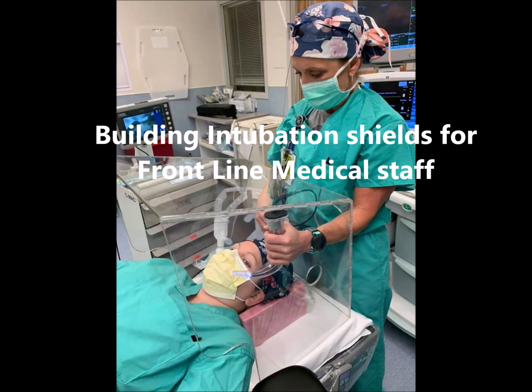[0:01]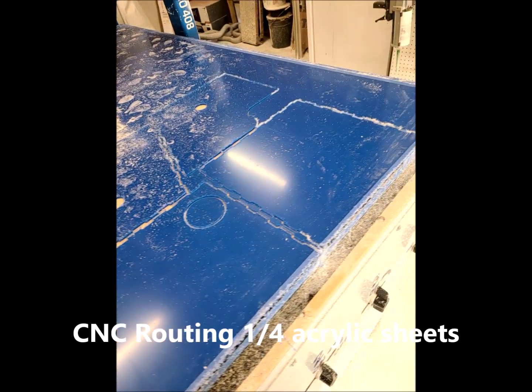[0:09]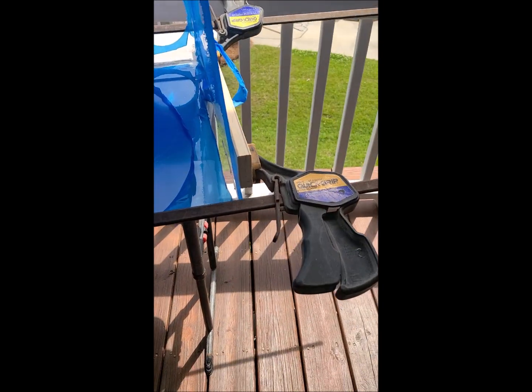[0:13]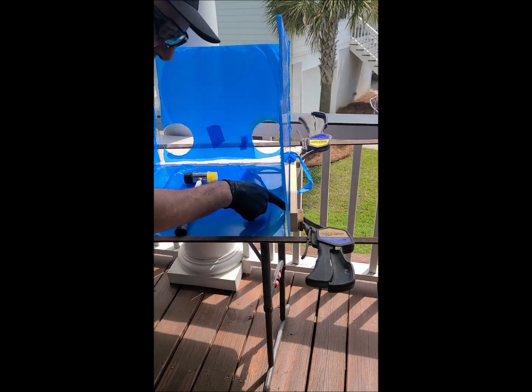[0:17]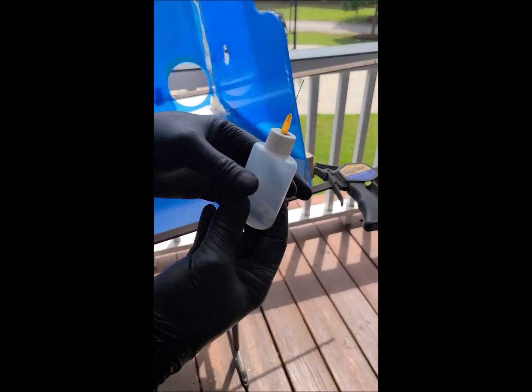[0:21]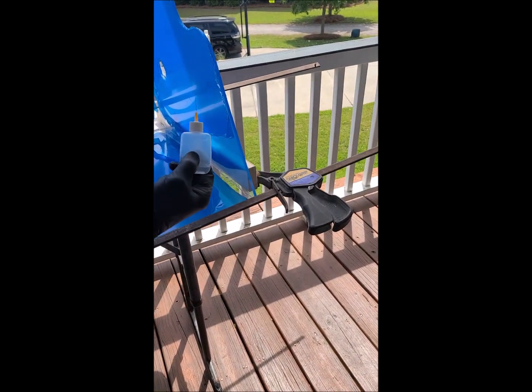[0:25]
So we're going to take and clamp this all together, and we're going to give it a couple taps, make sure that everything is nice and lined up, clamped together. Use the applicator bottle. You're going to go ahead and squeeze to get some air out, and then let it go as you come in.
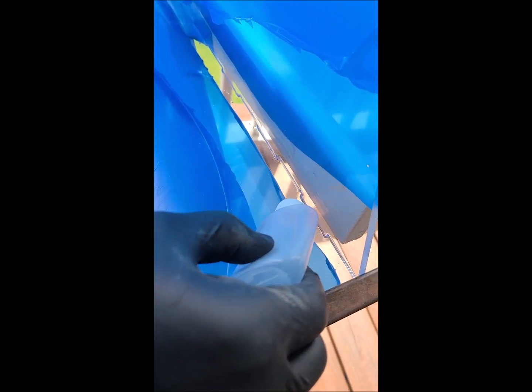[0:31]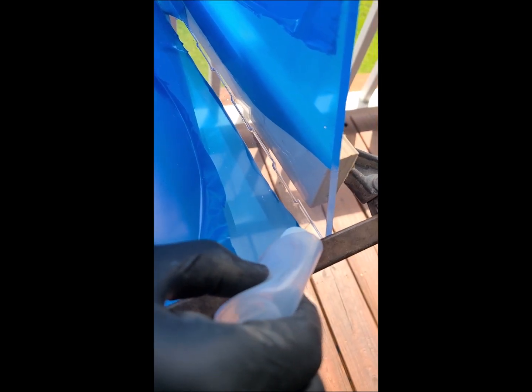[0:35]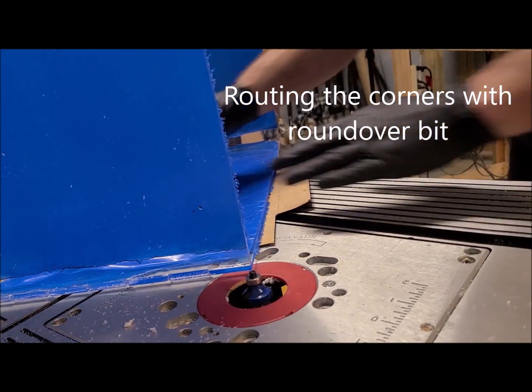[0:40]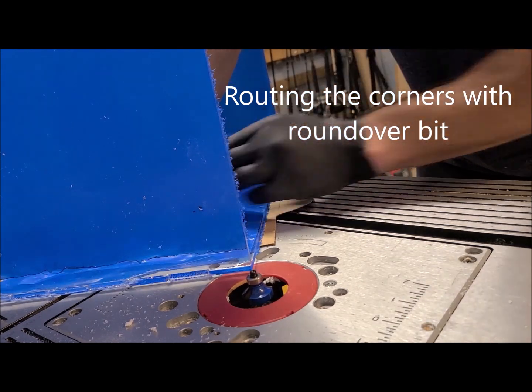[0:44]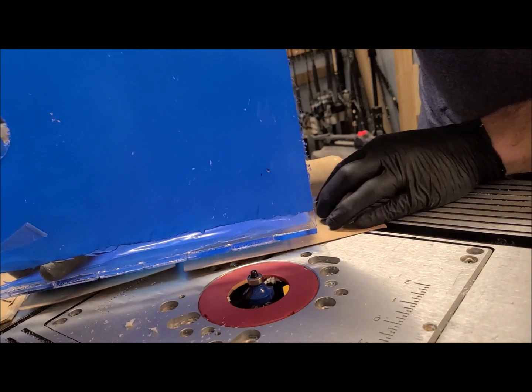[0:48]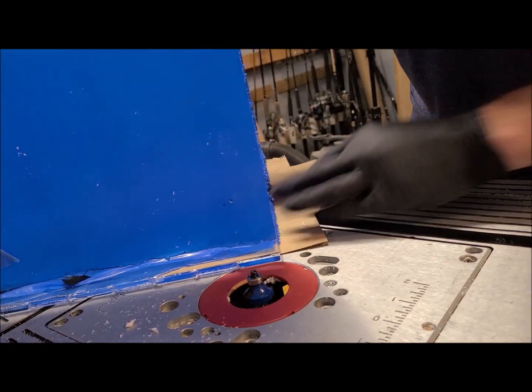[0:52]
And then you're going to go along the edge, and you'll see that that glue kind of gets sucked right up into those cracks. So now that these are glued together and taking some time to cure, we're going to take these sharp edges. We're just going to round them off a little bit with a little round over bit.
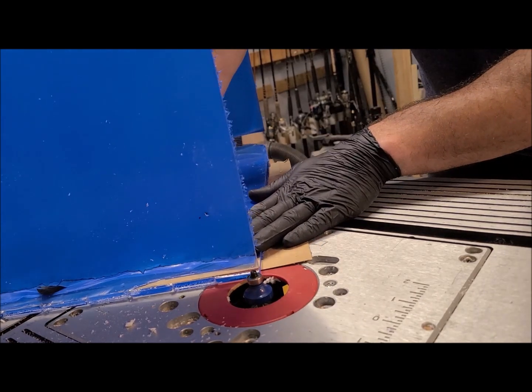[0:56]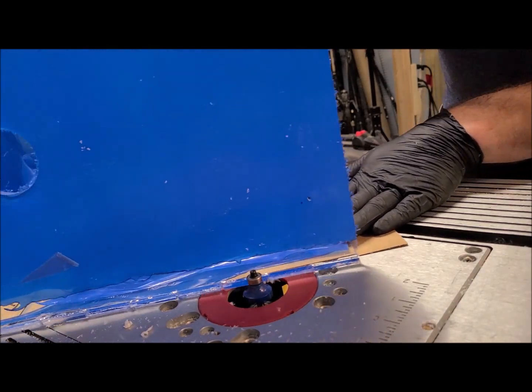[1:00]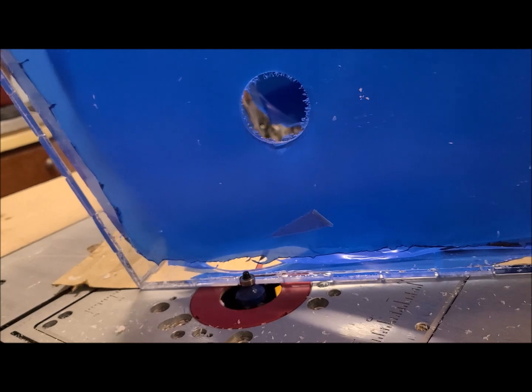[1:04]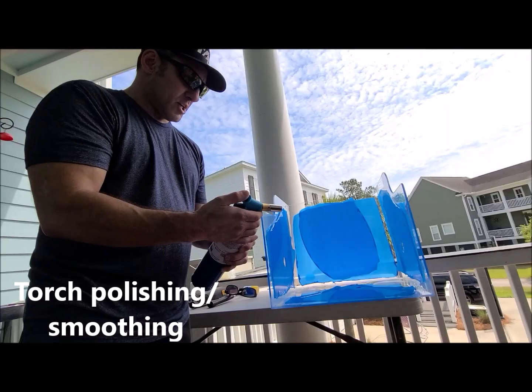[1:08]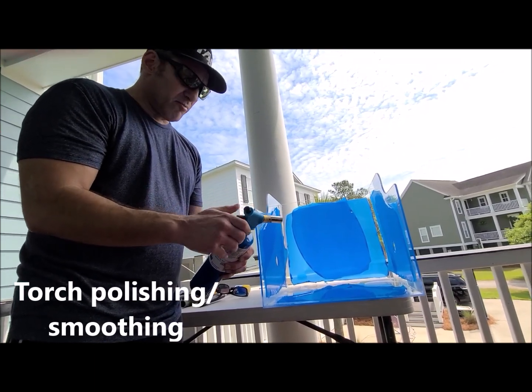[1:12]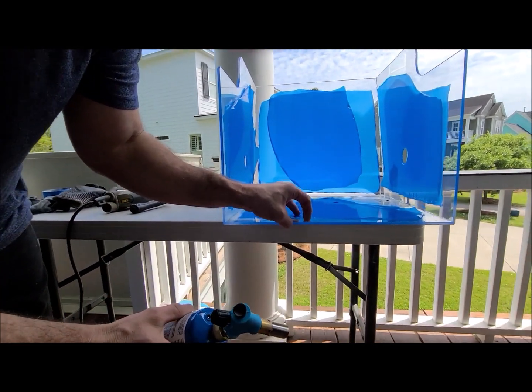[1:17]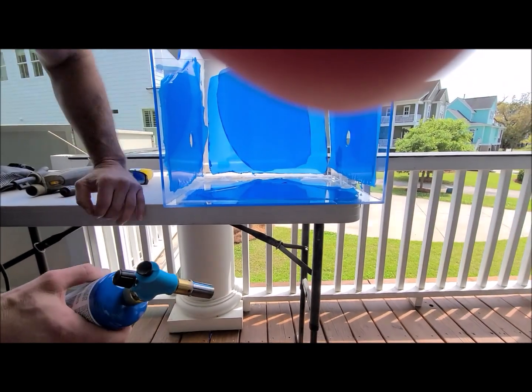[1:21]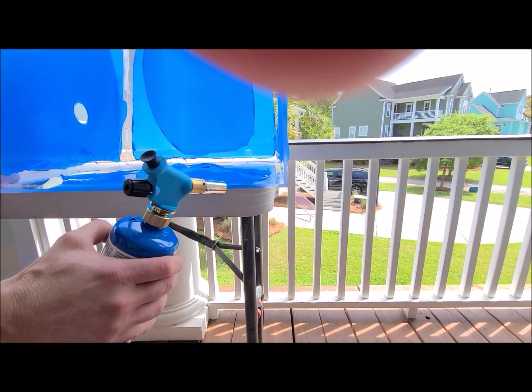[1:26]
Taking a torch, we're going to flame polish the edges here. If you look, they're really sharp. There's tooling marks in them, stuff like that, stuff to catch on the gowns and gloves and things. We take our torch and run it across that.
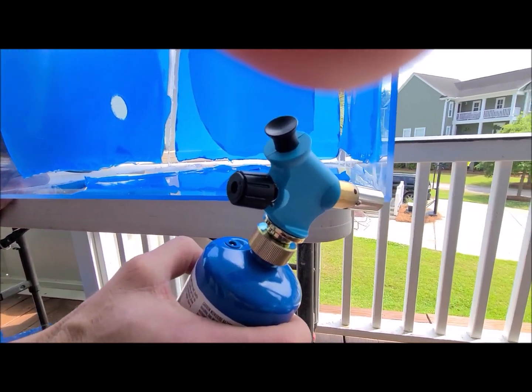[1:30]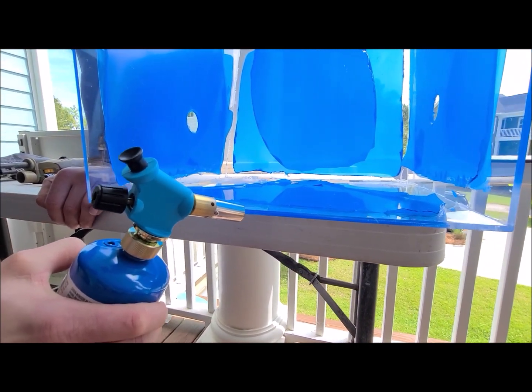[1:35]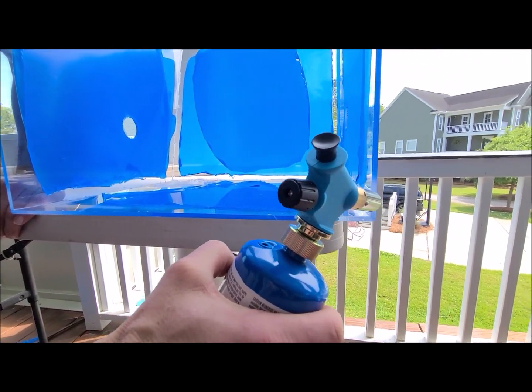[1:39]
You will see that those tooling marks kind of go away and it polishes it to where it's nice and smooth now.